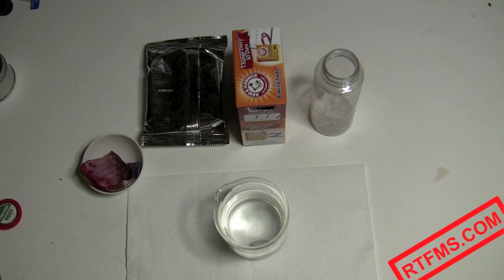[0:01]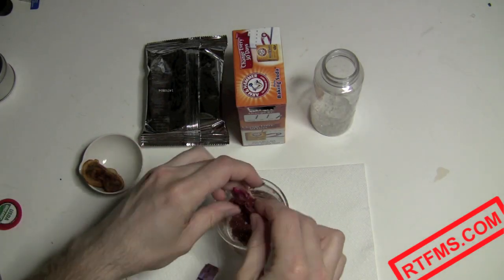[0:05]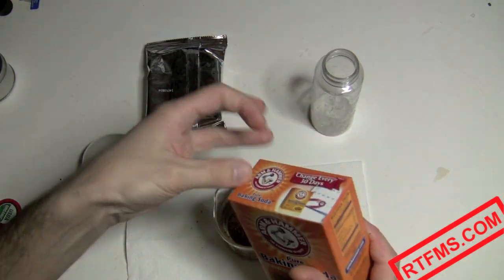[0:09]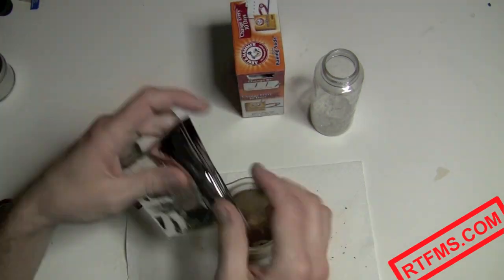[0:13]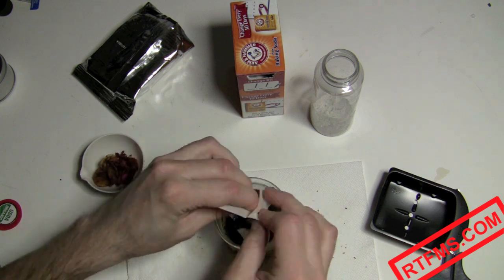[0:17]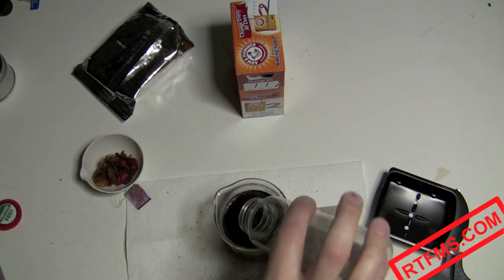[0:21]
Say I have this glass of water and I decided to add some tea from a used tea bag, baking soda in a quantity that won't be soluble in this amount of water and will stay at the bottom of the beaker, some terribly smelling coffee, you know, hotels rarely provide good coffee in their rooms, and some fine sand from sunny beaches of Florida. I love Florida.
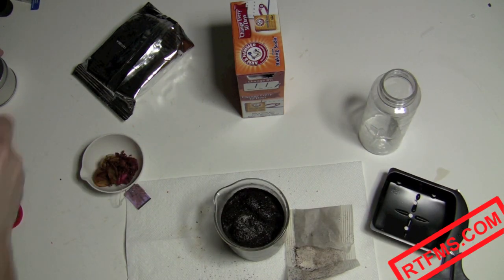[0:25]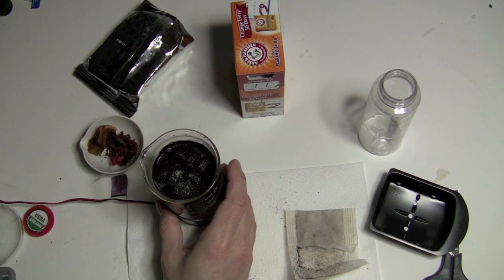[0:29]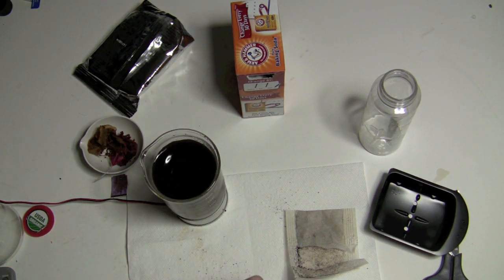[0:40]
Now, I want to mix it really well with this cool device, which we'll talk about in one of the following episodes. Now we have some really dirty, horribly stinking water. The question is, how to separate all the hard particles from the liquid? How to filter out all this mess?
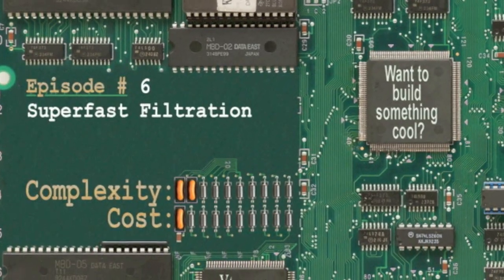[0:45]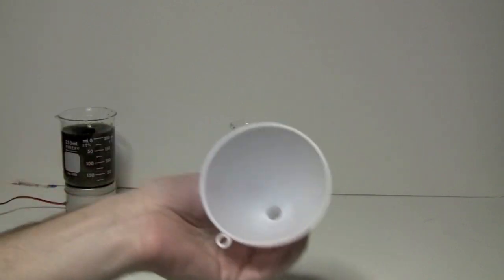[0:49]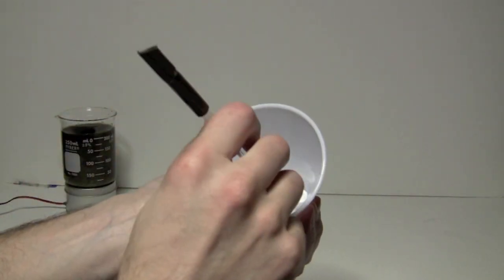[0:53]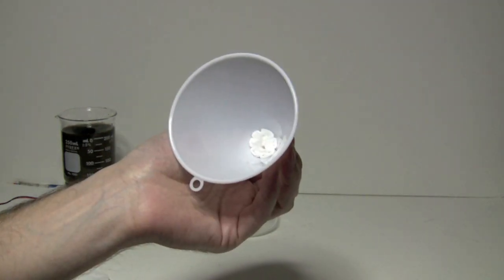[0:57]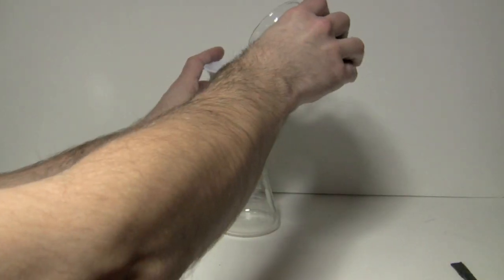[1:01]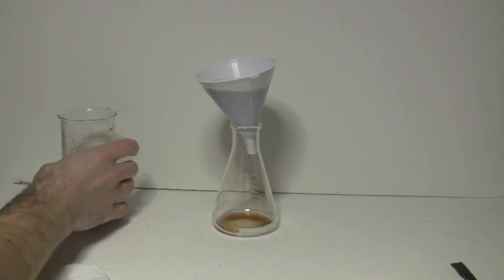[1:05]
First, let's try the traditional method. As the filter, I'm going to use a cotton disc, which I'm going to put inside this $3 plastic funnel, both available in a grocery store near you. So here is our filtration system, and let's put some dirty water into it. As you can see, the water slowly drips through the filter. This is a terrible way to filter anything, it will take hours.
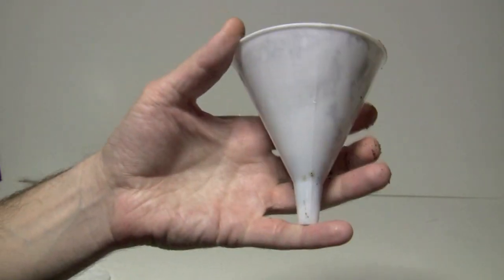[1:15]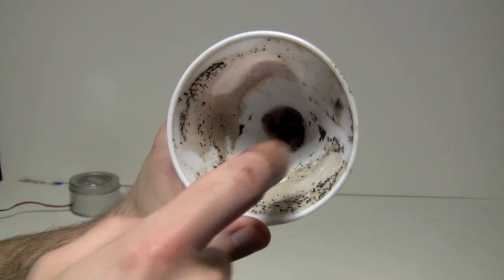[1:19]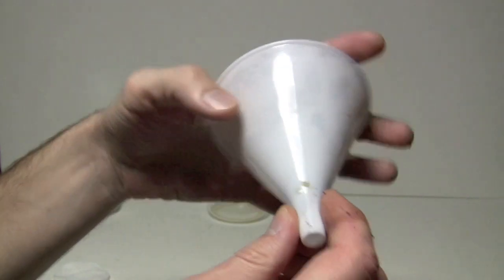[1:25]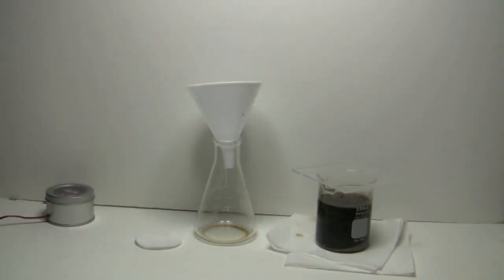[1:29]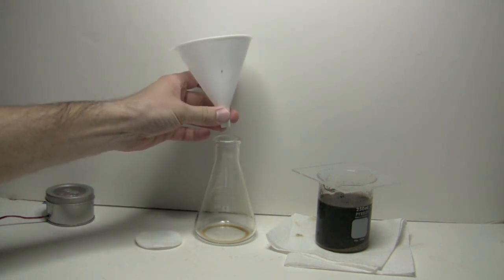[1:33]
The main problem with this method is the size of the filtration area. All our stuff has to go through the small hole, which gets clogged in no time. The solution to the problem is to increase the area of filtration. But first, let's solve one more problem. See how wobbly the funnel is? It also would be nice to keep it vertical to reduce the risk of spilling the nasty stuff we're about to filter.
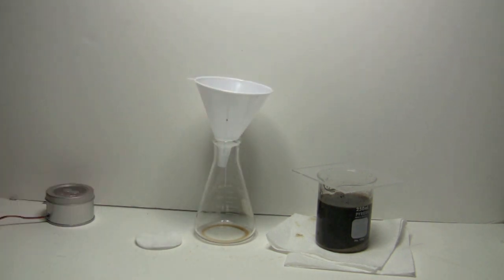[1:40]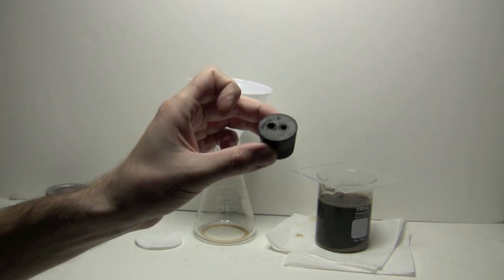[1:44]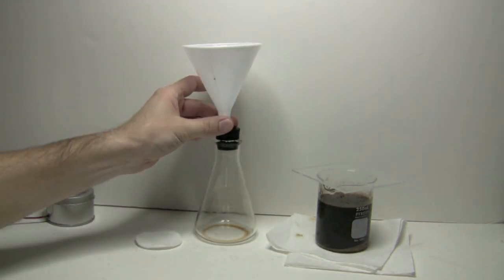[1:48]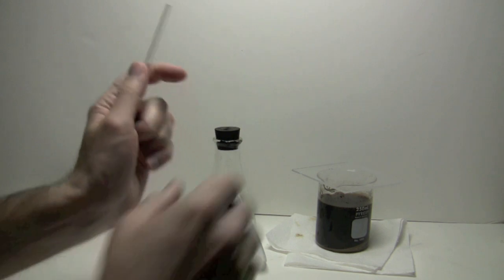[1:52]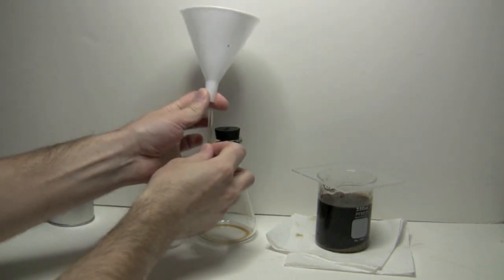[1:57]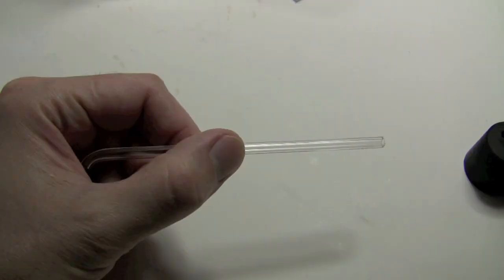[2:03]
To keep the funnel secure, I'm going to use this rubber stopper with two holes in it. One hole will let the filtered liquid in, and the other one will let the air out. This glass tubing will help me to attach the funnel to the stopper. It has to be long enough to go through the funnel neck, rubber stopper, and make it all the way into the flask. Let's cut the glass tubing to appropriate size.
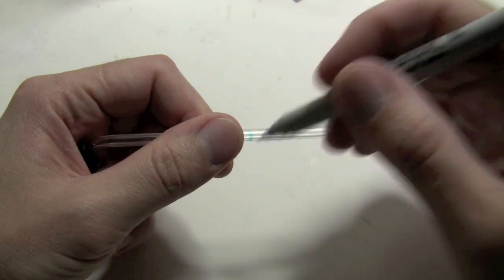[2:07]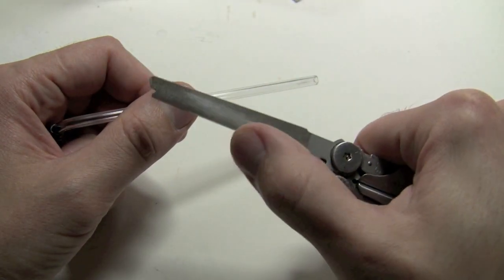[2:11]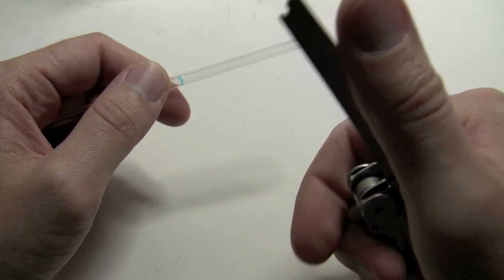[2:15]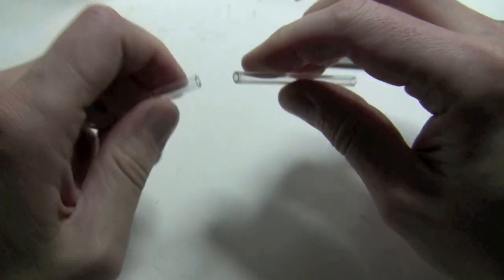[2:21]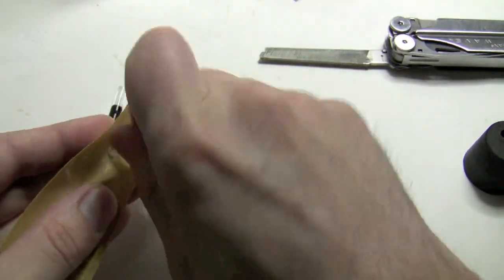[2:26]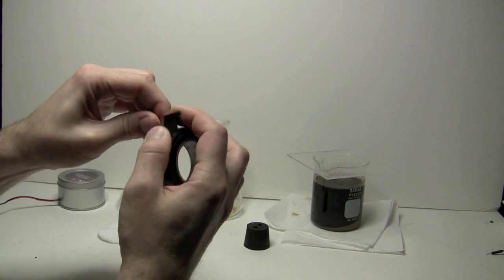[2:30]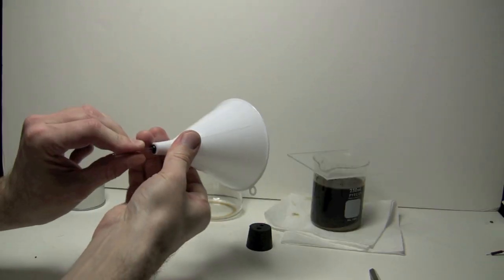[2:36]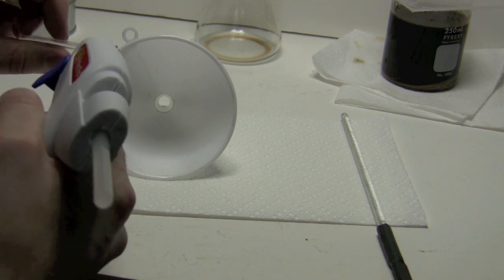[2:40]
Add some electrical tape around the glass tube to increase its diameter. Keep adding the tape until the tube fits the funnel neck snugly. The glue used in electrical tape is not particularly resistant to certain chemicals I'm going to filter in the future, so it's a good idea to cover the tape completely with hot glue before installing it into the funnel.
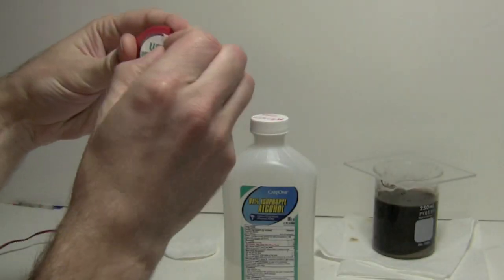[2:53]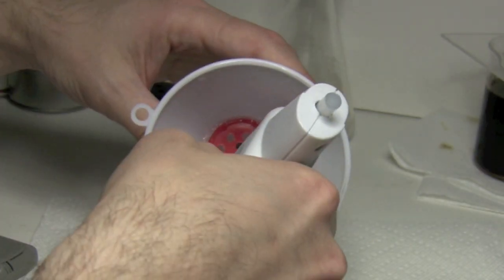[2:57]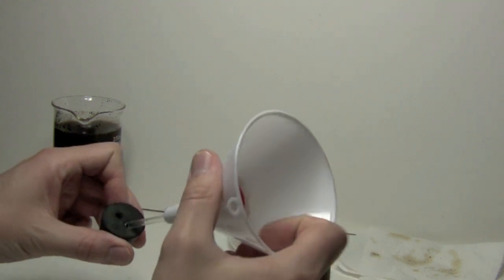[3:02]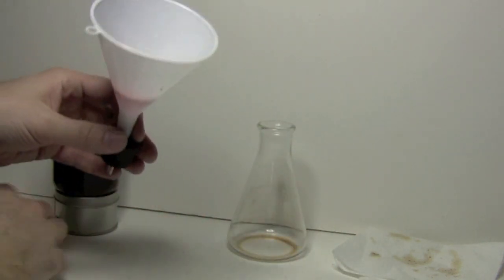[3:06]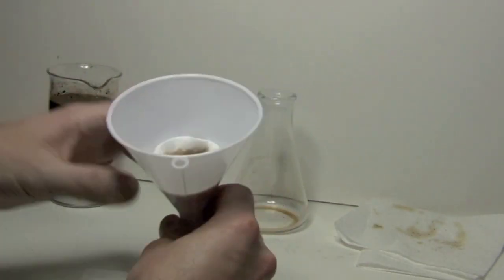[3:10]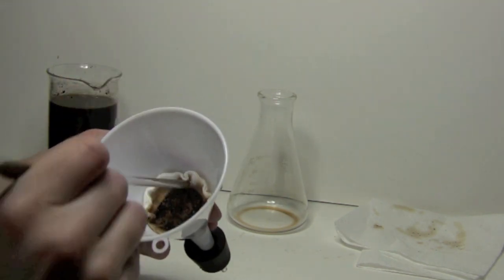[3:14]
Let's remove the label from this milk jar cap, drill a bunch of holes in it, and hot glue it into the funnel. The result is not only more sturdy, but it also has much larger filtration area. Let's try it in action. One important thing about this setup is that the filter has to be wet so it sticks to the walls of the funnel.
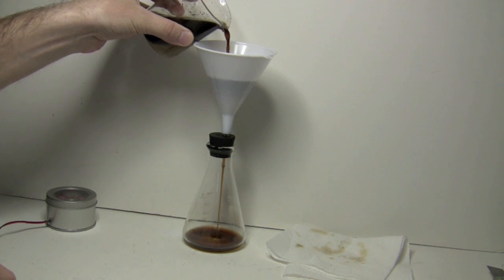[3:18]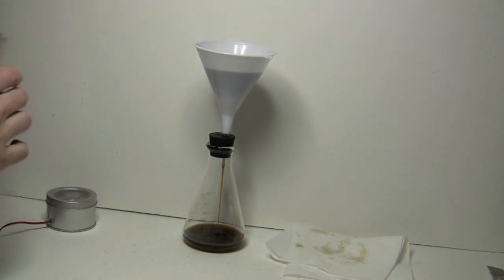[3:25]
Let's pour some dirty liquid and see how it goes through. Wow, the performance of the filtration increased substantially. Now it will take only a few minutes to filter the same amount of liquid. But what if I need to filter even faster?
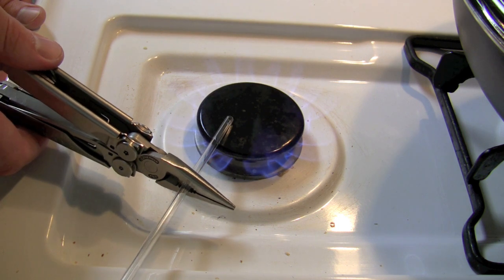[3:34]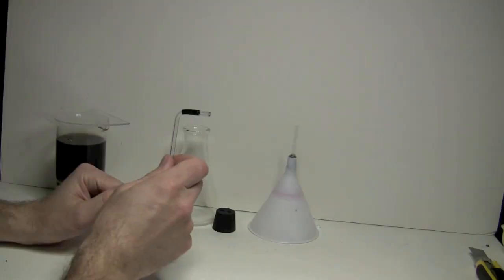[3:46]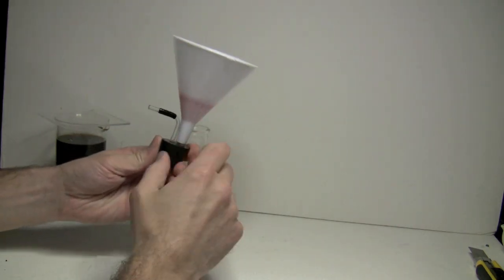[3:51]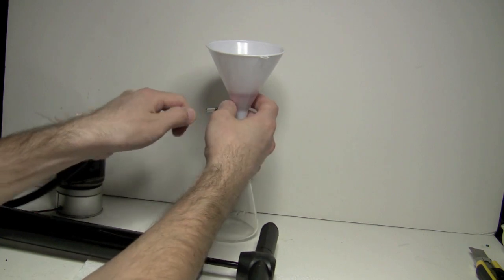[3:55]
I will need another piece of glass tubing bent at right angle. You can make it in the kitchen. Just heat up the tubing for a minute or two, applying constant force, and it will bend easily. Let's install this piece of glass into the second hole of the rubber seal and attach it to the vacuum pump we built in the previous episode of the RTFMs video blog.
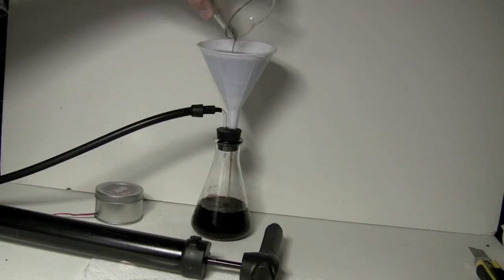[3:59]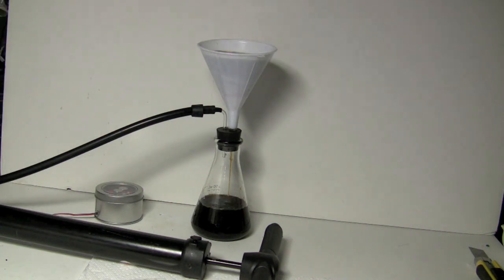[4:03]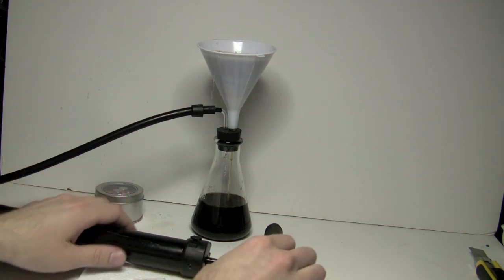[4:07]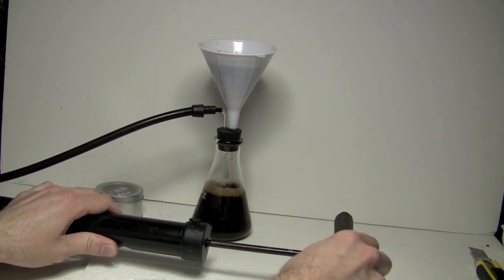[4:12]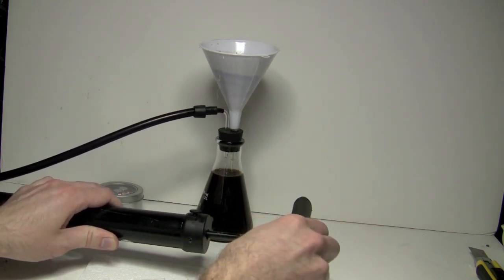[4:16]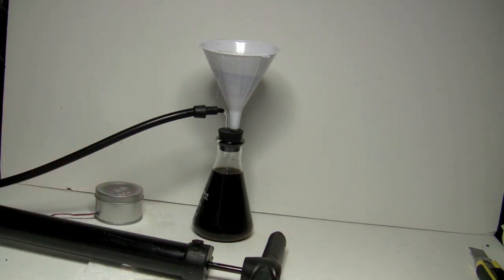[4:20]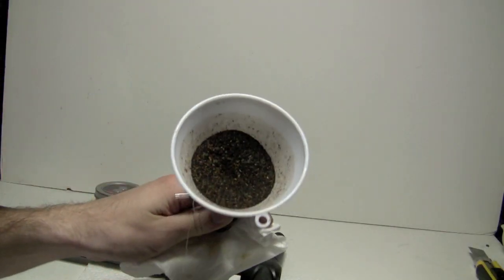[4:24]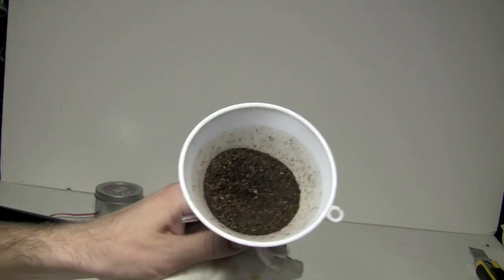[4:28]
Now let's see this setup in action. The filter is already clogged at this point, so the filtration process is quite slow. Now let me create some vacuum in the flask. In 1, 2, 3, 4, 5. Filtration process complete. Now that's the performance we're talking about. Another cool thing is that the filter contents is almost dry, so we lost almost no product.
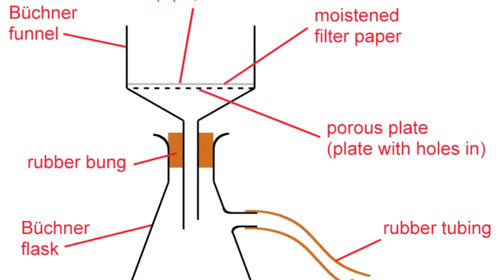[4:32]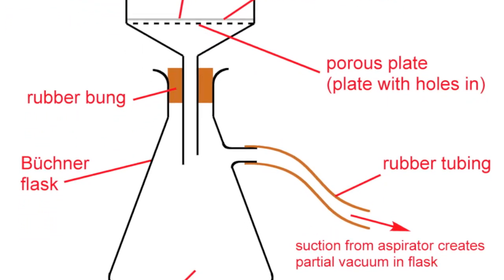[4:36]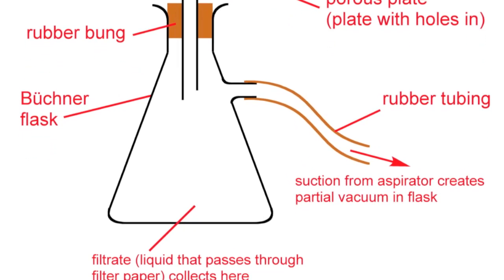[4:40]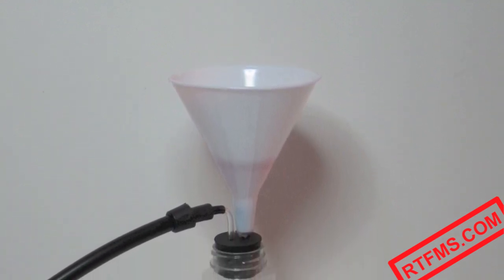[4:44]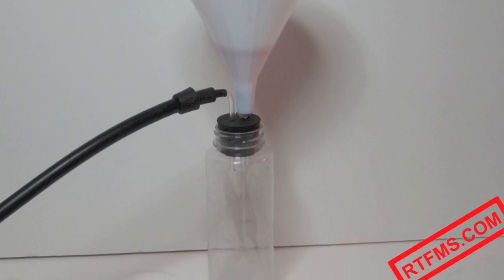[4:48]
The vacuum filtration device we built is called a Buchner flask. It's named after its inventor, German industrial chemist Ernst Buchner. You can actually buy it on the internet starting from $70 shipped. But building your own was much cheaper and more fun, wasn't it? I can't wait to show you what I'm going to use it for in the following episodes, so keep watching!